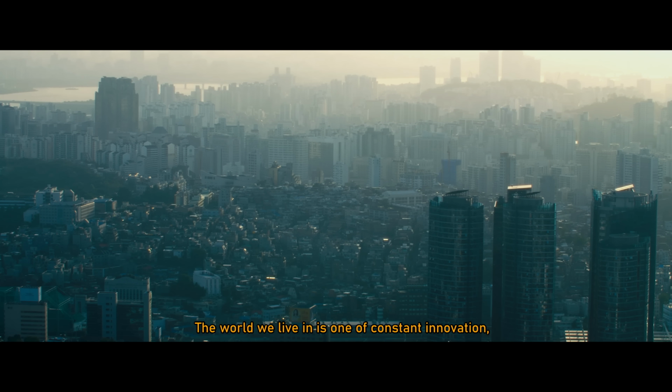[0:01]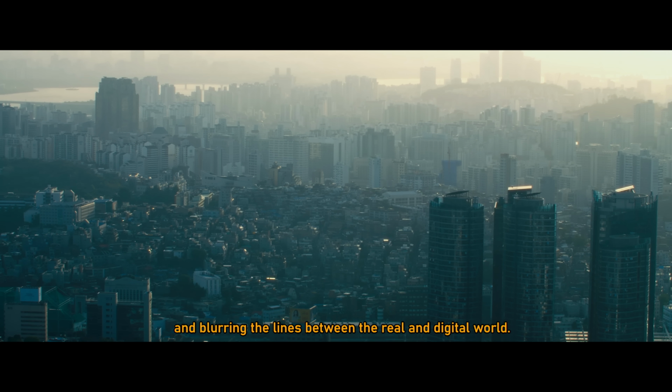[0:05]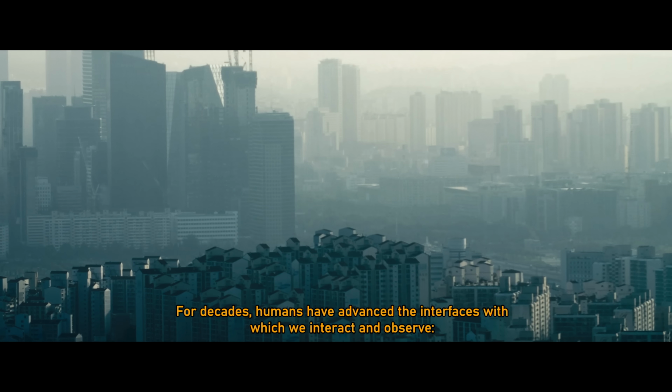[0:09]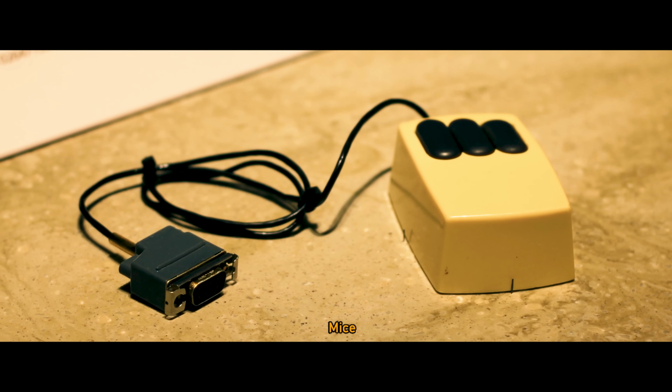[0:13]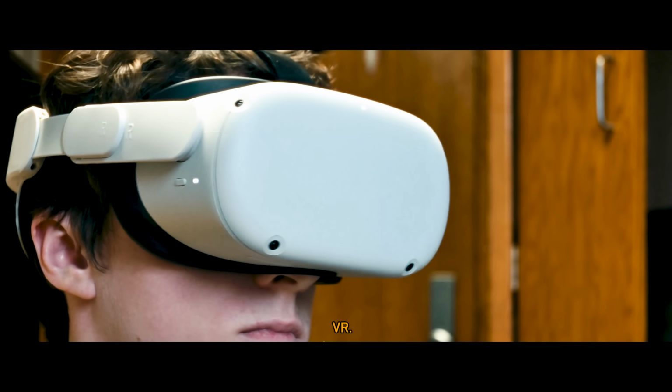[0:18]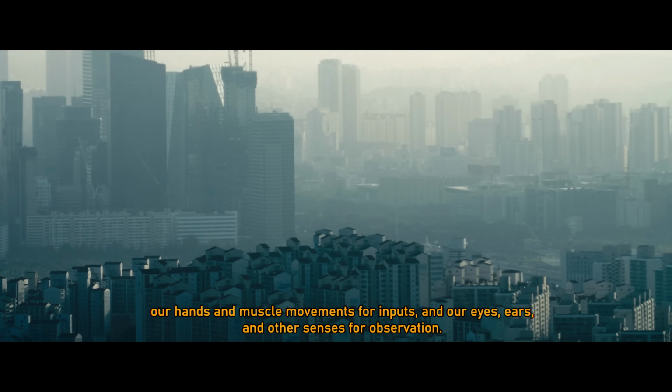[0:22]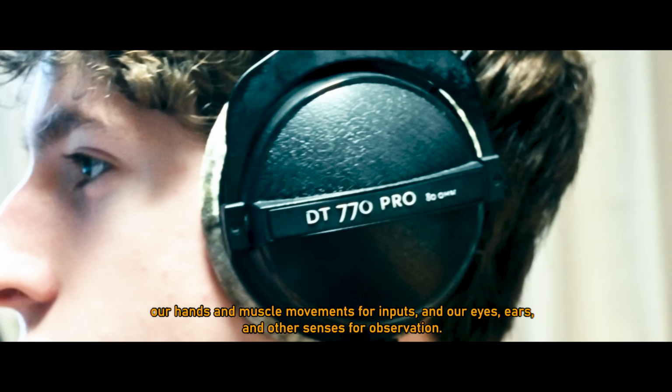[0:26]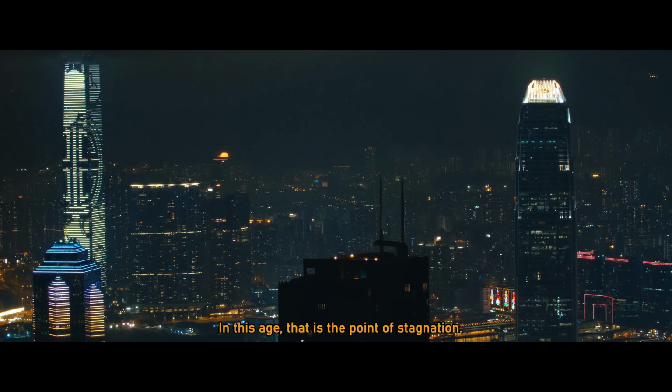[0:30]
The world we live in is one of constant innovation, progression of technology, and blurring the lines between the real and digital world. For decades, humans have advanced the interfaces with which we interact and observe. Keyboards, mice, touchscreen, incandescent, CRT, LED, VR. But our abilities are limited by the methods we use, our hands and muscle movements for inputs, and our eyes, ears, and other senses for observation. In this age, that is the point of stagnation.
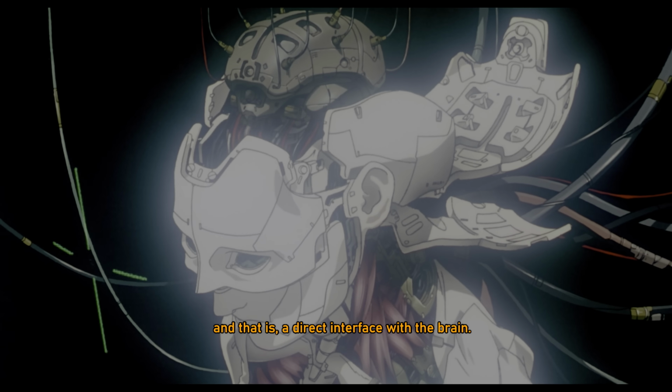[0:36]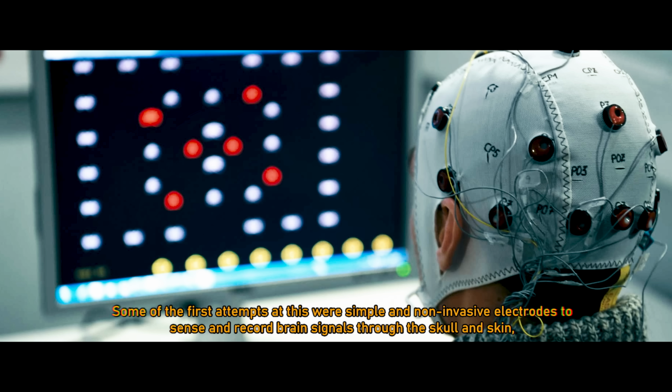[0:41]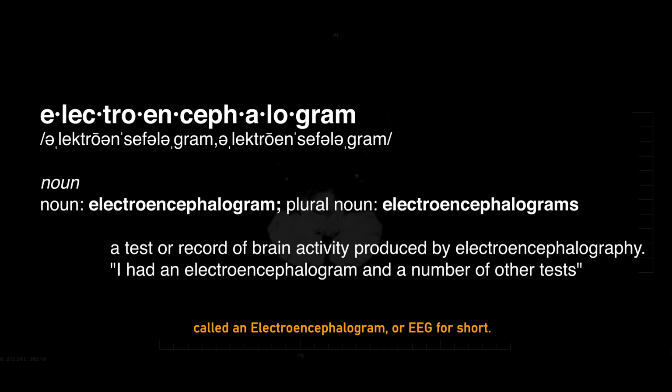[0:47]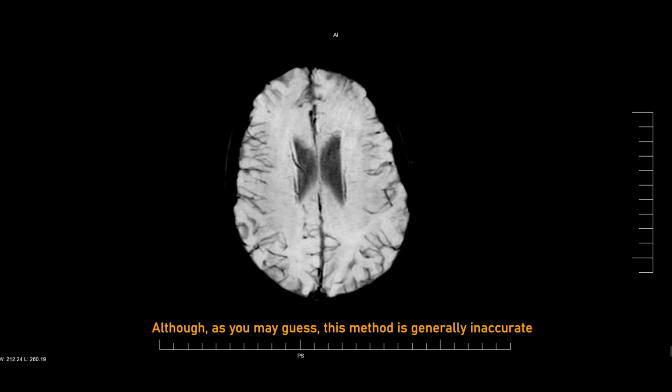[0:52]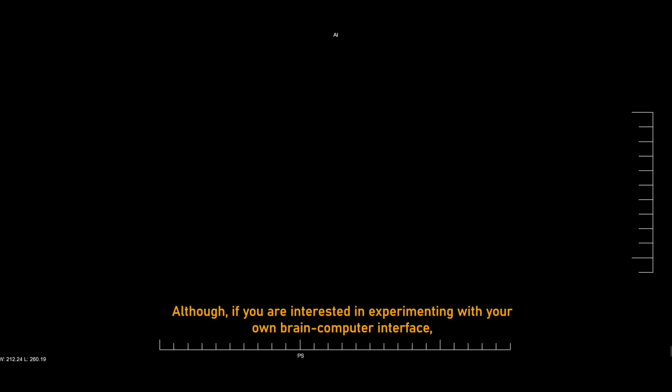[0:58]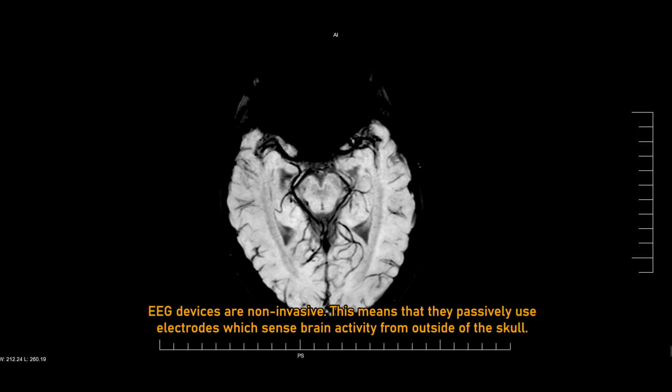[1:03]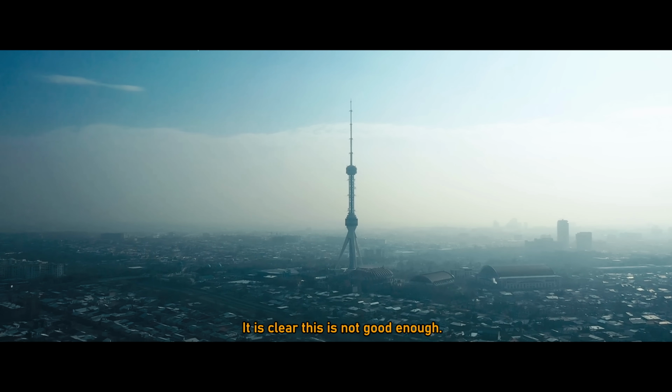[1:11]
There's only one next step that will propel humanity into the future, and that is a direct interface with the brain. Some of the first attempts at this were simple and non-invasive electrodes to sense and record brain signals through the skull and skin, called an electroencephalogram, or EEG for short. Although, as you may guess, this method is generally inaccurate and not particularly useful for the applications we are interested in. Although, if you are interested in experimenting with your own brain-computer interface, it is still the easiest method. EEG devices are non-invasive. This means that they passively use electrodes which sense brain activity from outside of the skull. It is clear this is not good enough.
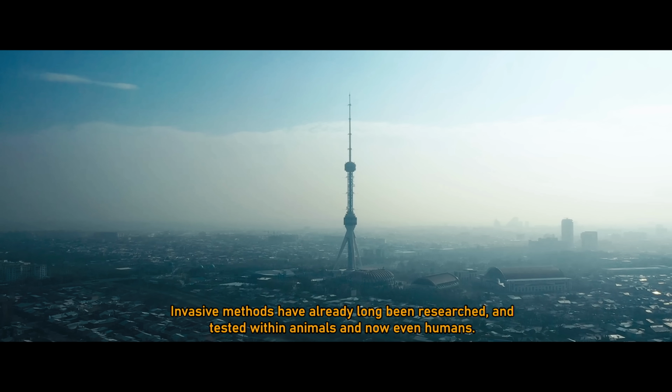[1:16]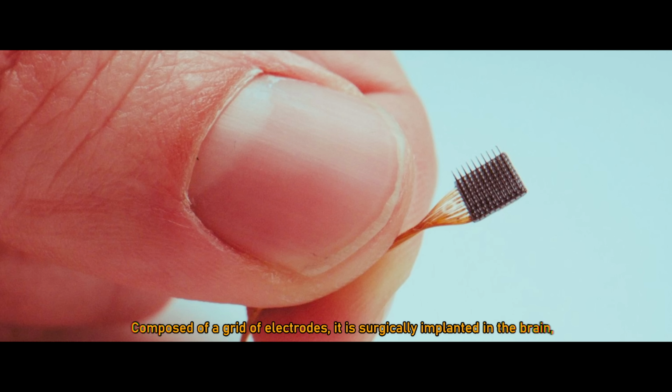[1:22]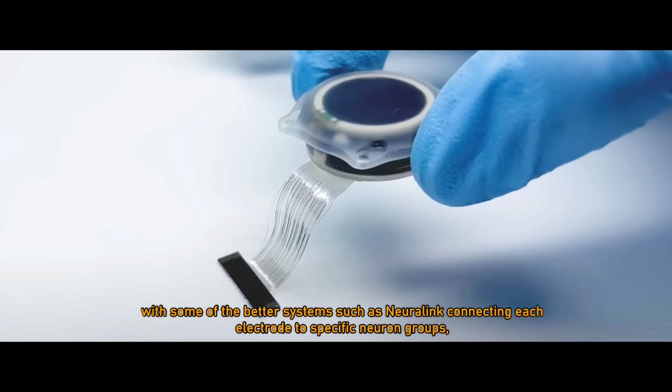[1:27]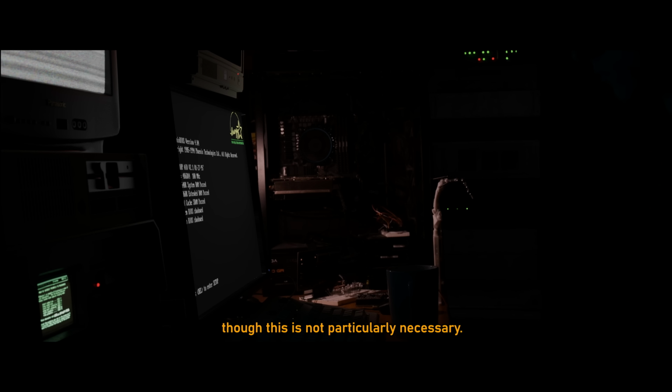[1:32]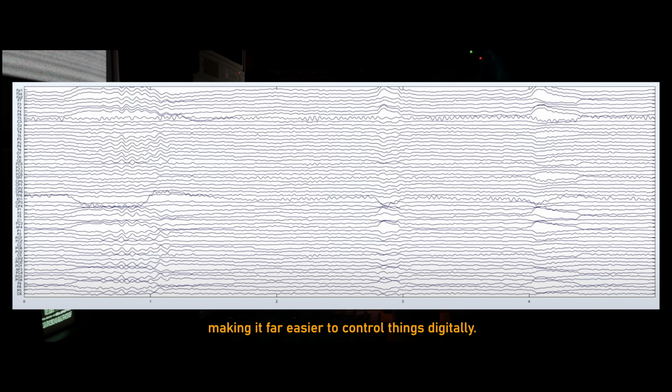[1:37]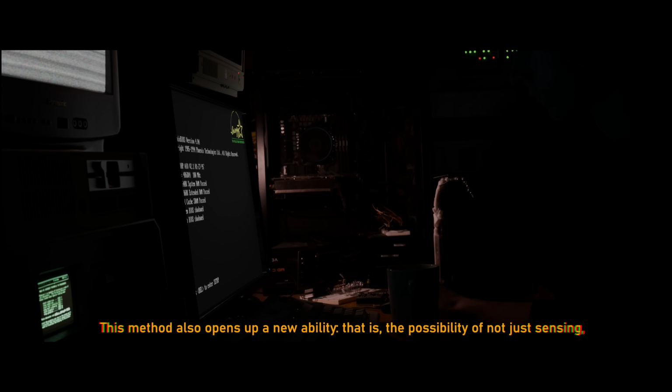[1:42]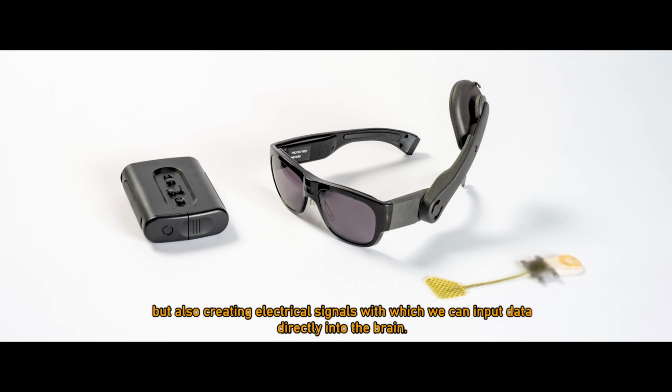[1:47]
Invasive methods have already long been researched and tested within animals and now even humans. The method we will be talking about today is the microelectrode array. Composed of a grid of electrodes, it is surgically implanted in the brain, with some of the better systems such as Neuralink connecting each electrode to specific neuron groups, though this is not particularly necessary. This essentially allows for real-time sensing of many extremely specific areas of the brain, making it far easier to control things digitally. This method also opens up a new ability, that is, the possibility of not just sensing, but also creating electrical signals with which we can input data directly into the brain.
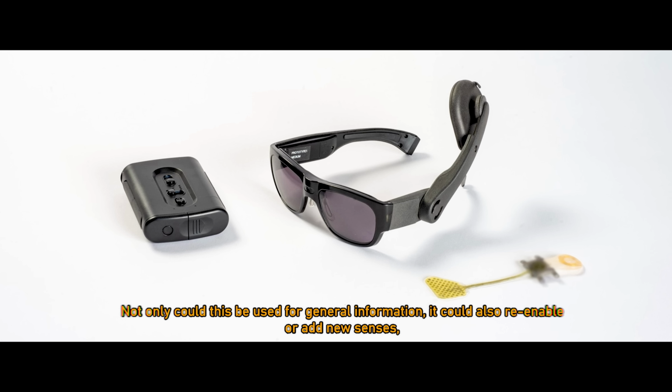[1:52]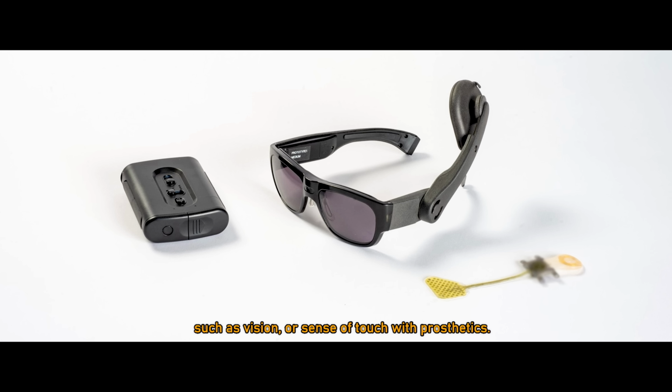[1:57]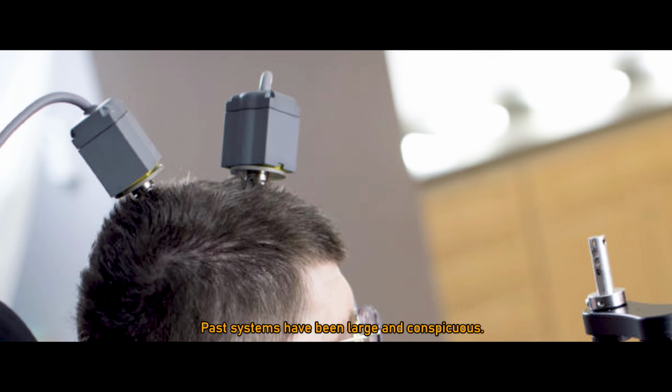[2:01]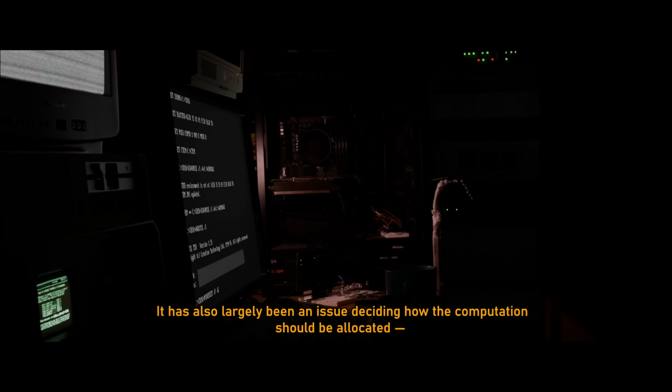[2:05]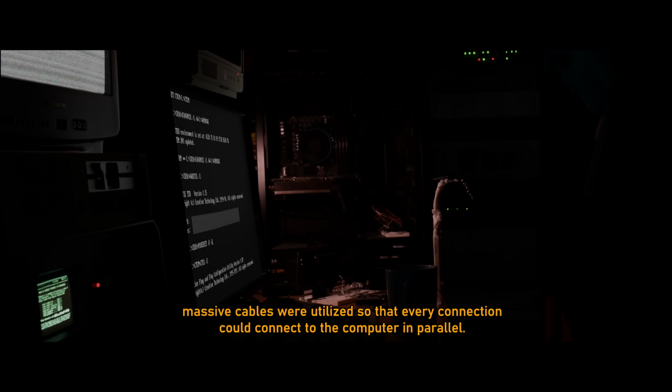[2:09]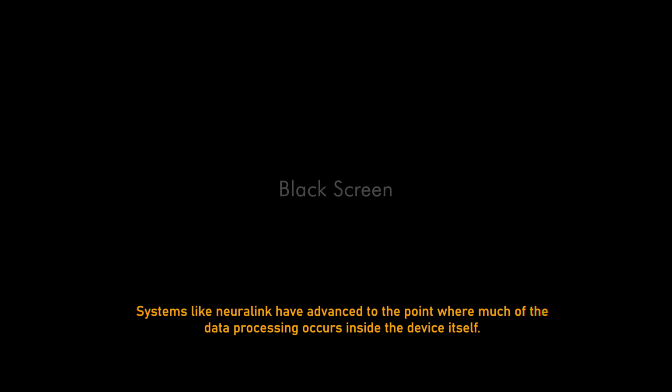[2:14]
Not only could this be used for general information, it could also re-enable or add new senses, such as vision or sense of touch with prosthetics. Past systems have been large and conspicuous. It has also largely been an issue deciding how the computation should be allocated. In years when data processing was difficult, even by a large computer, massive cables were utilized so that every connection could connect to the computer in parallel. Systems like Neuralink have advanced to the point where much of the data processing occurs inside the device itself.
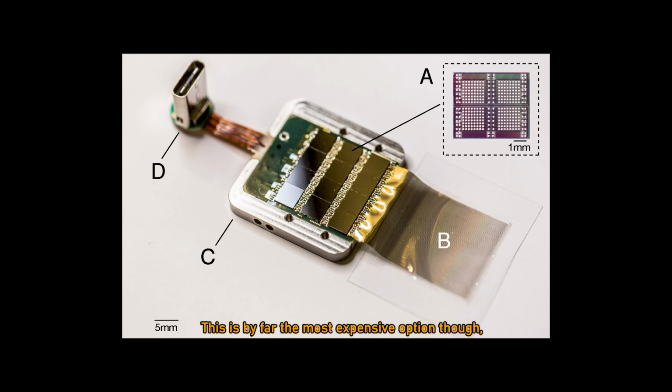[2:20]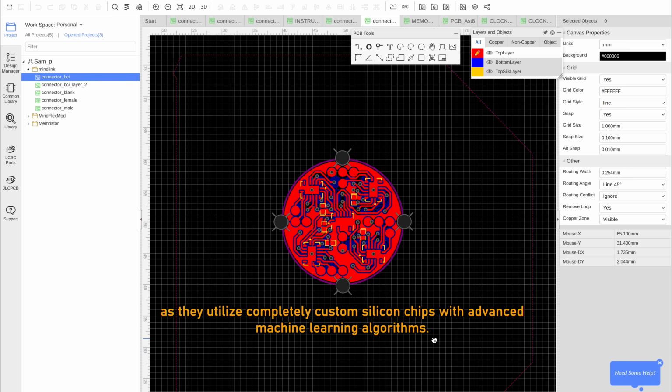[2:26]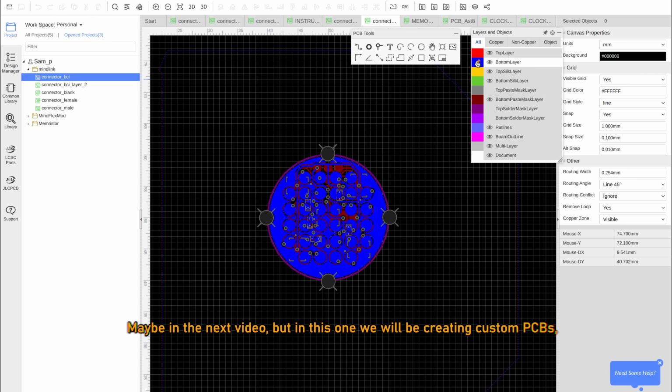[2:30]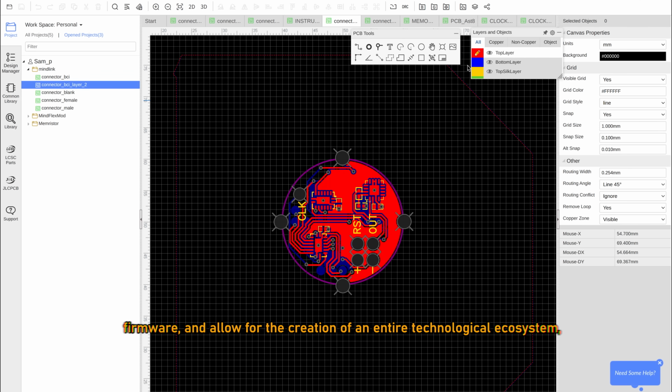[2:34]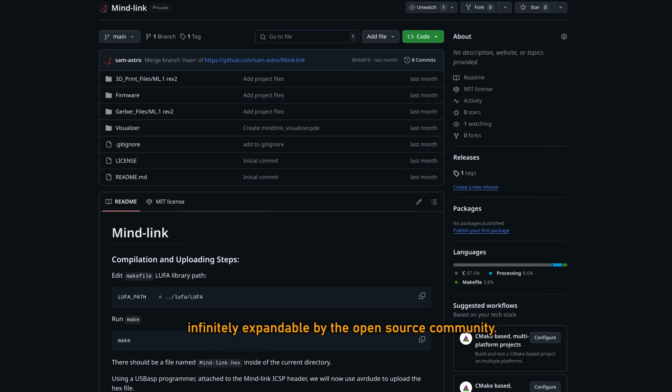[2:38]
This is by far the most expensive option though, as they utilize completely custom silicon chips with advanced machine learning algorithms. Today I will not be creating my own silicon, unfortunately. Maybe in the next video, but in this one we will be creating custom PCBs, firmware, and allow for the creation of an entire technological ecosystem, infinitely expandable by the open source community.
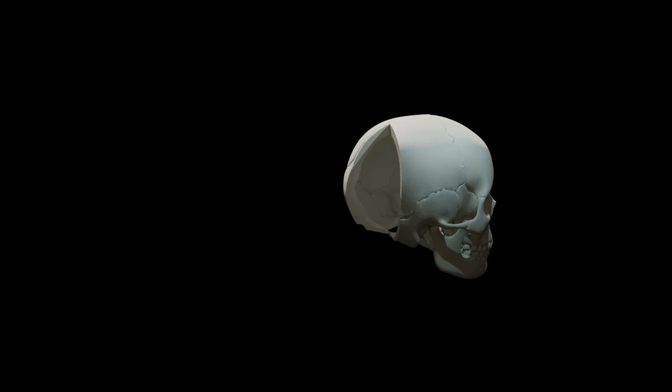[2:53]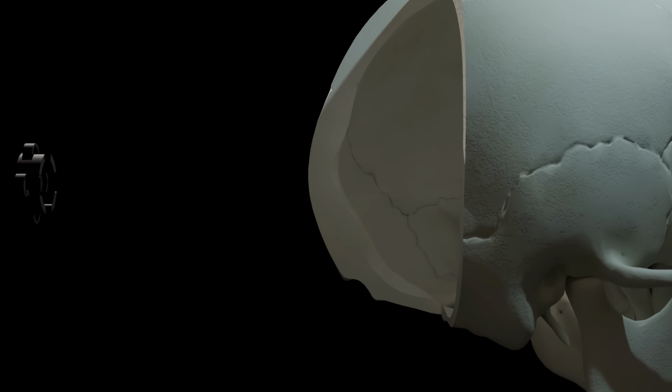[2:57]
Starting off, let's identify some dimensional constraints. As stated before, it needs to be quite small. The back of the skull, near where the spine connects, is the thickest part on average, so ideally that is where it should be implanted. This would allow for the device to have as much hardware as possible, while still remaining in the same general size footprint your head already does.
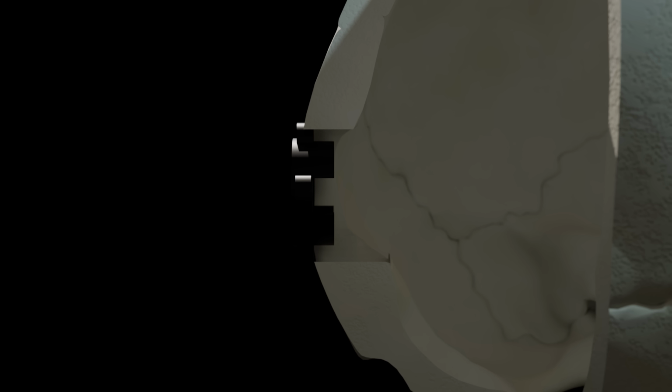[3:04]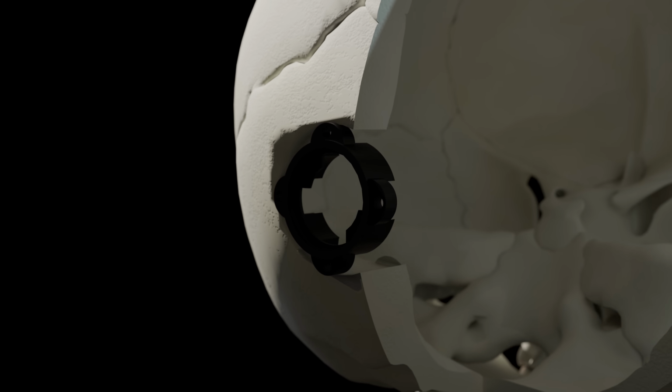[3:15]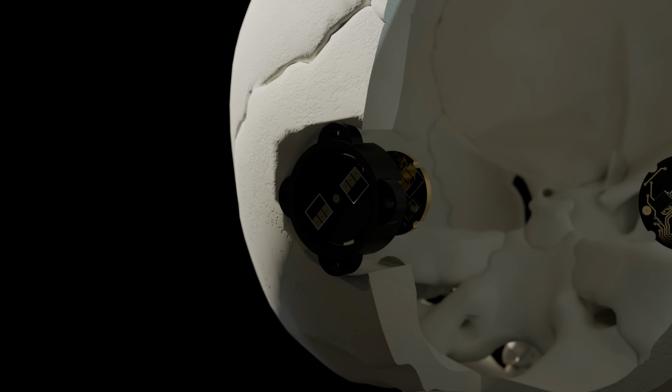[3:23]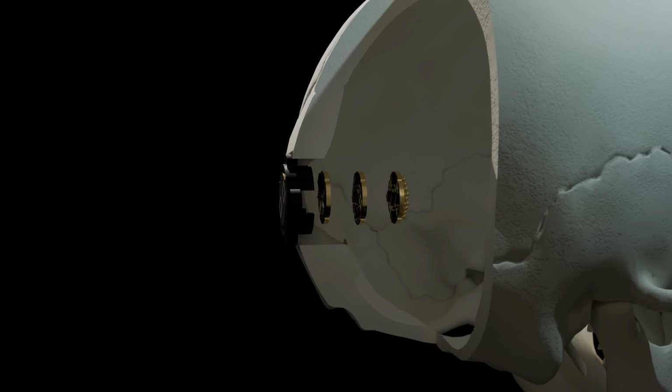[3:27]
I believe it is also quite important to be able to fully remove the device without any form of surgery, just a simple screwdriver, to allow for extremely simple maintenance and installing custom expansions. So I decided I would make it a circular shape, about 20mm in diameter. Now it would be essentially impossible to do anything with that scale, so it is actually a stacked design, making use of that depth of the skull. Each layer can be connected by spring pins to allow for electrical contacts and data transfer between layers.
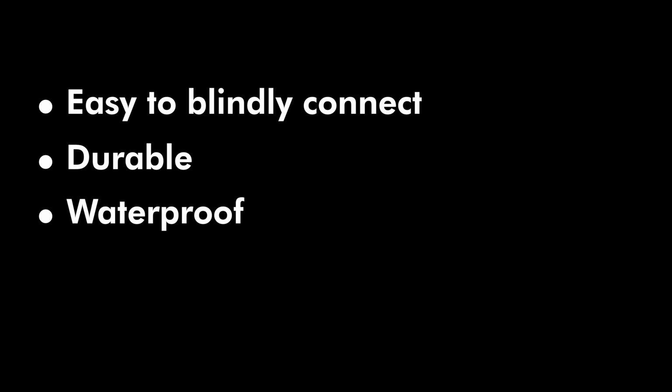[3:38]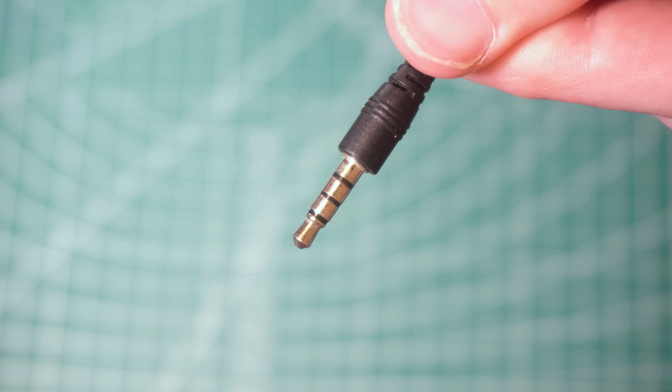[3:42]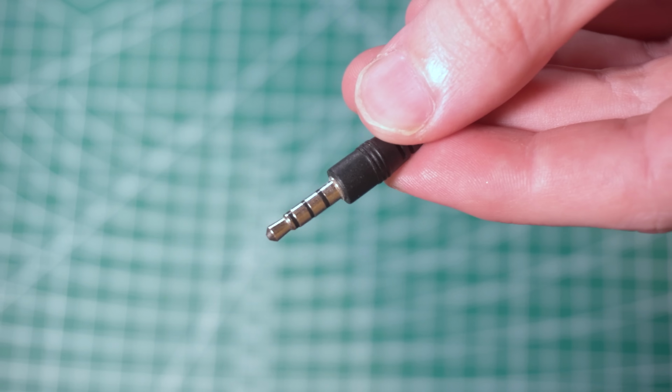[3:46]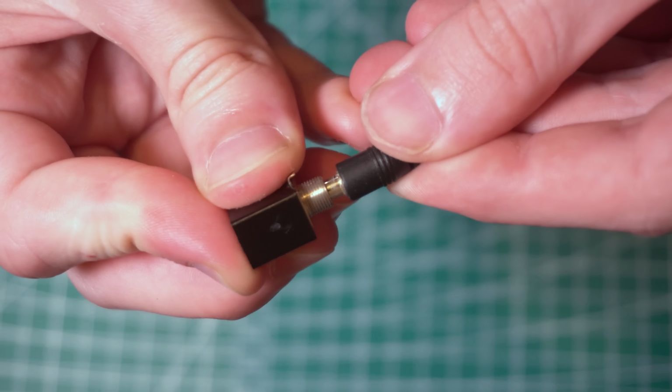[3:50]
Another important constraint is that I want any connector to the device to be easy to connect without looking, durable, waterproof, and compatible with a current standard. While it does have its own shortcomings, I've always admired the 3.5mm audio connector. It allows one to easily plug a cable in at any orientation and can rotate freely. It also has a number of siblings of different sizes and standards, but it is usually used for analog signals.
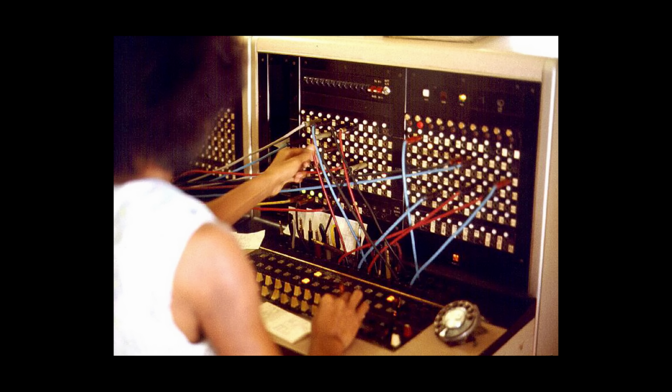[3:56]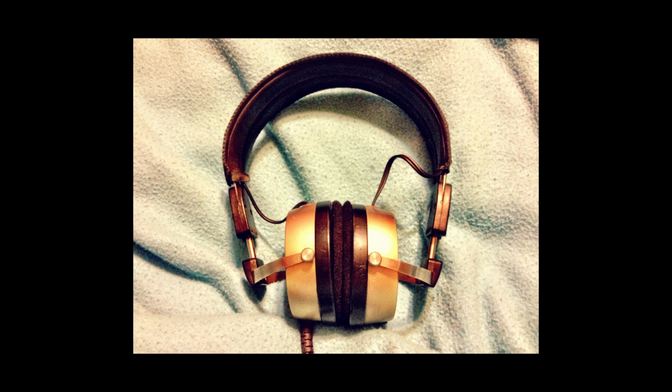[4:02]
It was originally invented for phone switchboards in the late 19th century, but is now most commonly used for headphones and audio equipment. It would not be applicable to use for a brain-computer interface application though, for a number of reasons. The first is that it is too long, even with the shortest being about 1 centimeter in length. We are putting the device on the back of the head, so we do have roughly this depth to work with, but we have other issues as well.
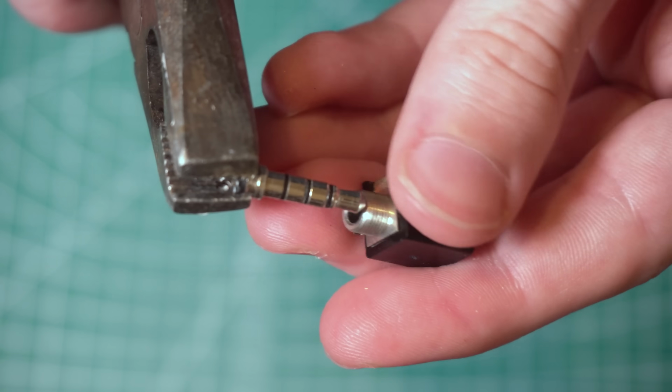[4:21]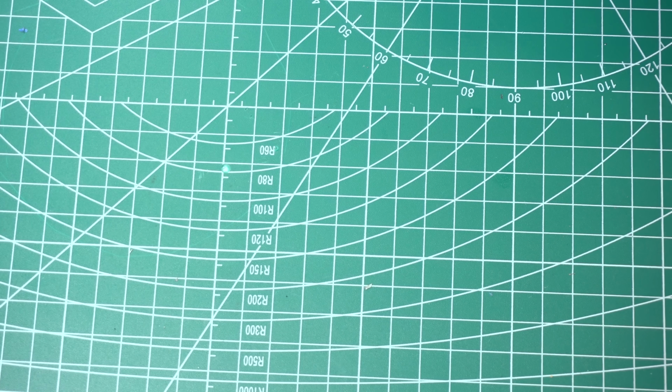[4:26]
If the connector itself fails by breaking, it does so not safely. Those of you who have had a headphone connector break off inside a device would know, it is difficult to remove or replace. So instead of making our connector have pads around a cylinder, we can flatten them, creating a circular connector. This way, all of the connections happen at the surface, and the connector can freely rotate.
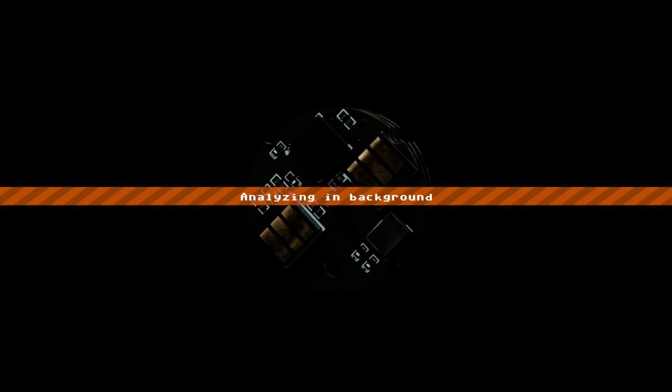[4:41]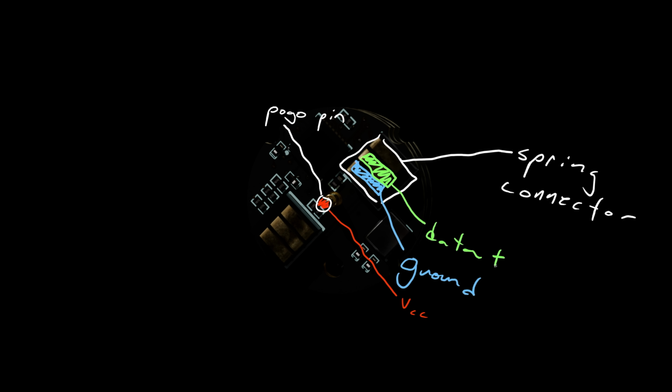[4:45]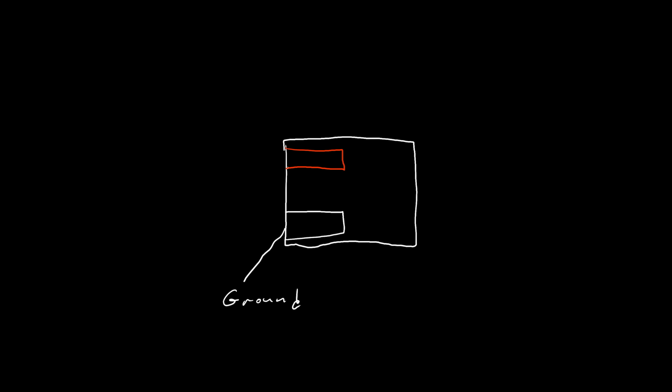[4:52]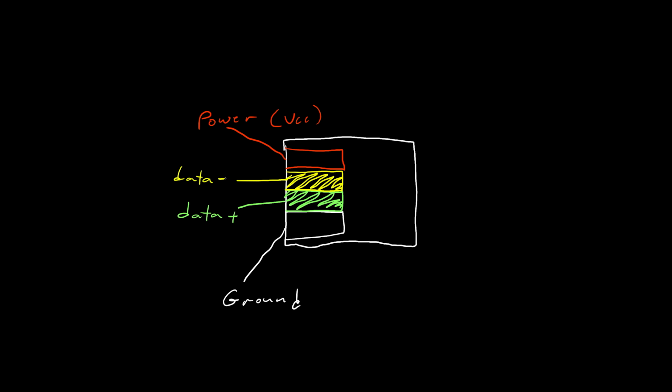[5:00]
The cable side will just be a flat PCB for simplicity, and the device itself will have a spring connector connecting to each of the pads, with a single pogo pin for power in the center. I decided to make this compatible with USB, so it contains 4 total connections, for ground, power, data plus, and data minus. This will make connecting to computers and accessories easy, but it will also allow adding expansions by treating them as USB devices.
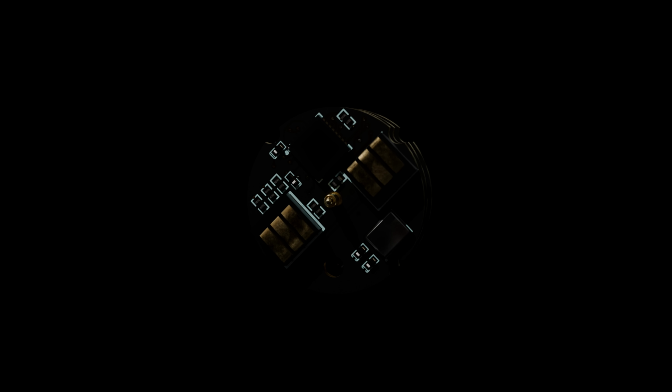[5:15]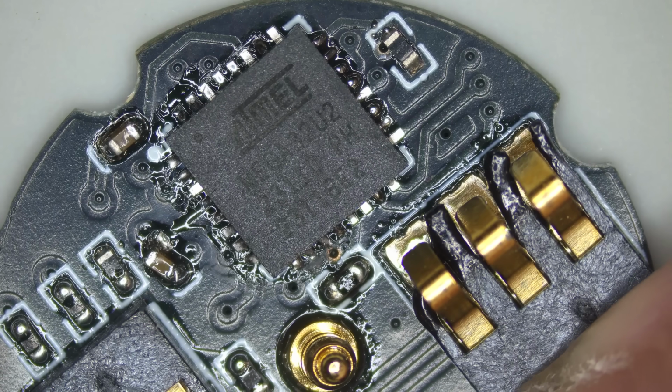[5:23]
Working backwards from the cable, it will connect to the device's PCB stack through a placeholder riser. This is a layer that just increases the height of the stack, so that in the future you can swap in an expansion device. After that, it connects to the main board of the device. The purpose of this board is to handle all inputs, accessories, USB devices, and read the BCI data. I use an Atmega32U2 microcontroller for this purpose because of its built-in USB support, but ideally this role should be delegated to a more powerful processor in the future.
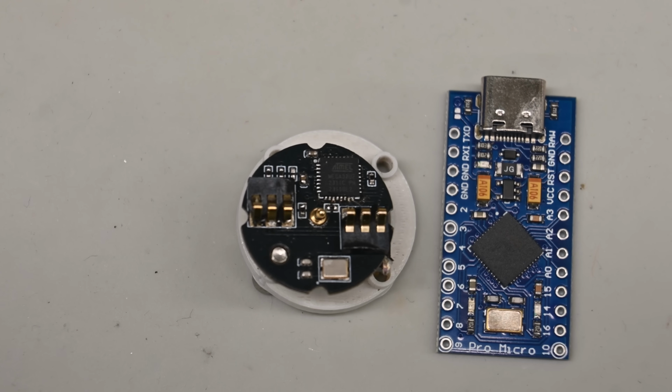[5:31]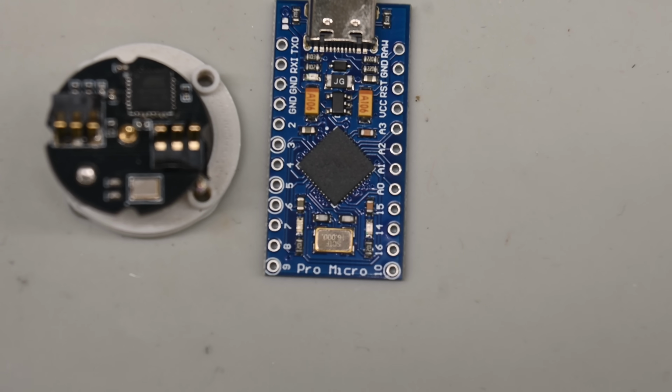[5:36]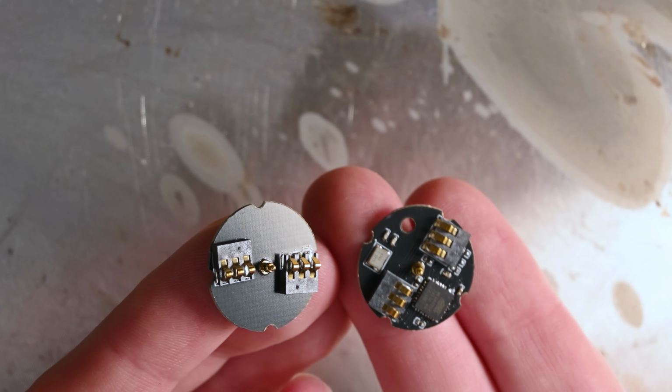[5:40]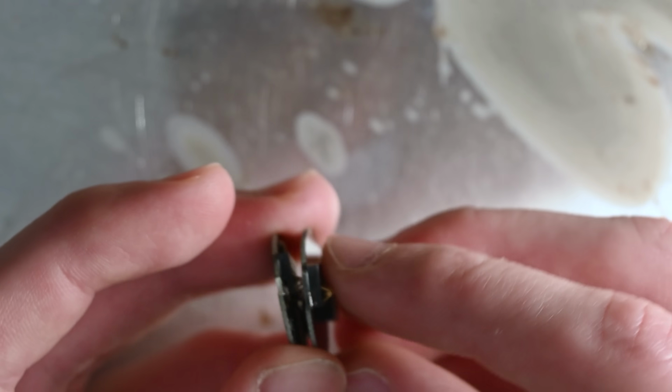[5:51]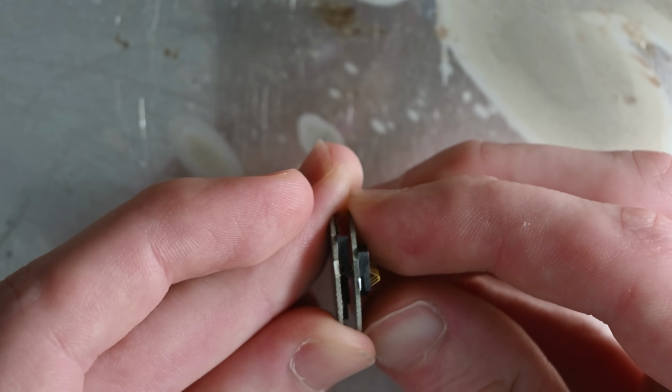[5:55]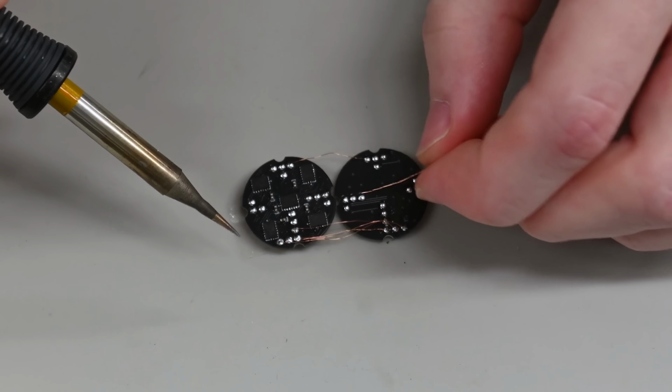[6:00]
The 32U2 is a smaller and slightly less capable little sibling to the Atmega32U4, which is used for things such as the Arduino Pro Micro. It is also important to note that this is the last layer to use USB. This is because the next parts not only require more data pins, and it would be a waste of time and space to add another USB chip, but it also is quite an essential component, so really should not require separation beyond this point unless damaged or an upgrade is needed. This may change in the future as well, just to allow more modularity anyway, but currently these connections I've decided to be completely hand soldered.
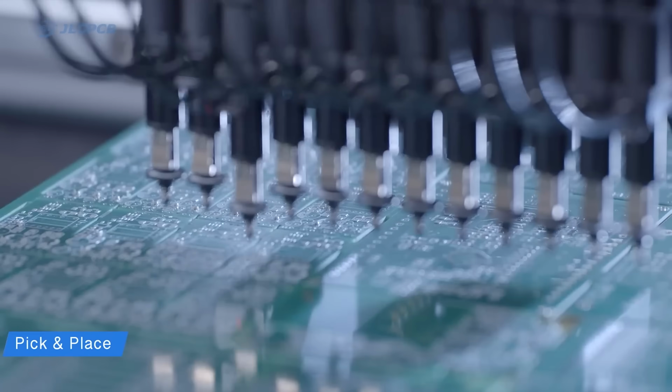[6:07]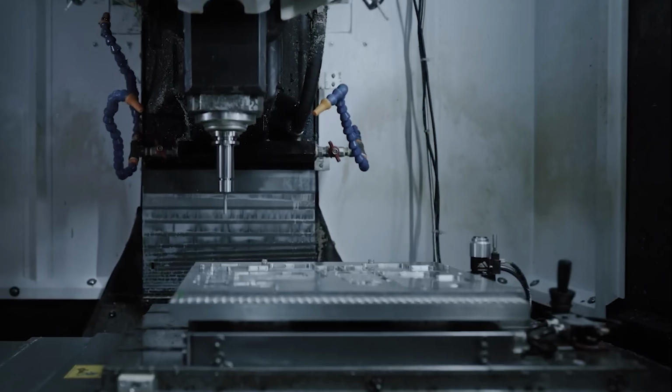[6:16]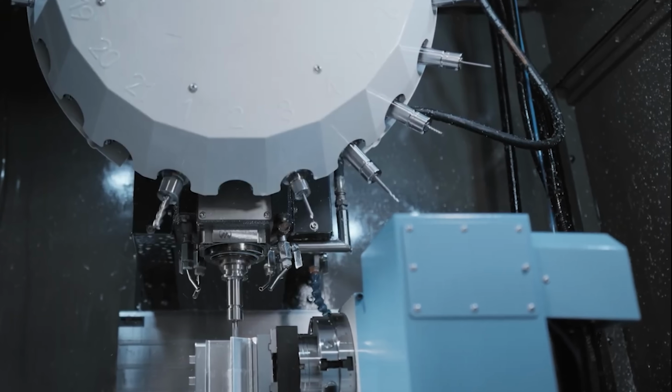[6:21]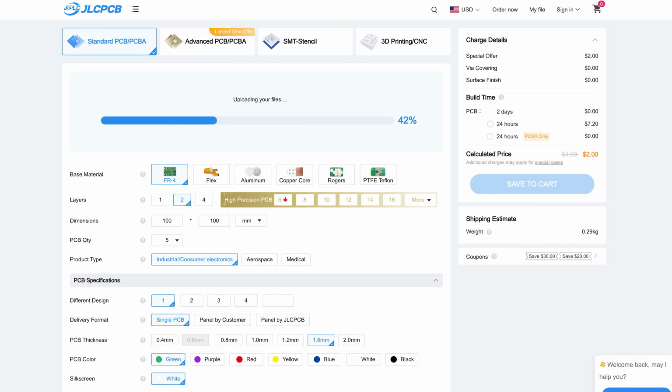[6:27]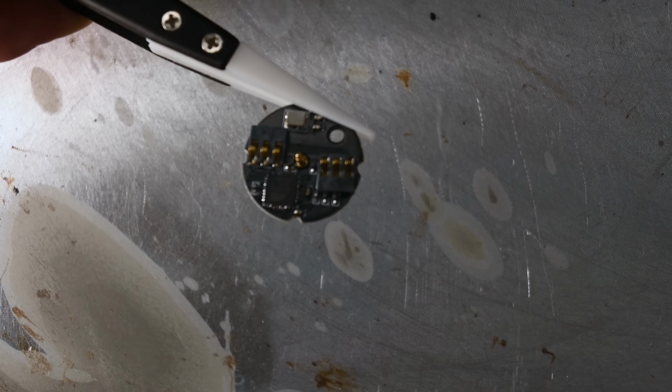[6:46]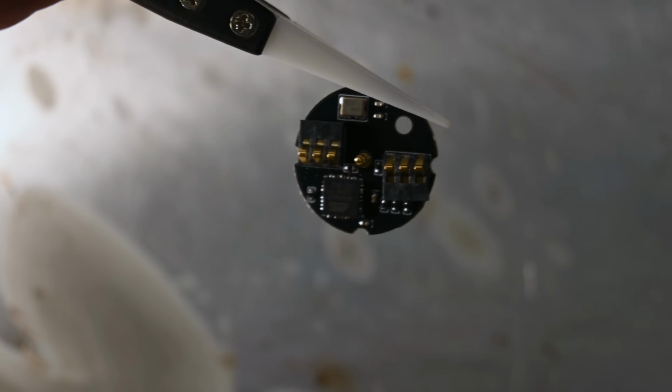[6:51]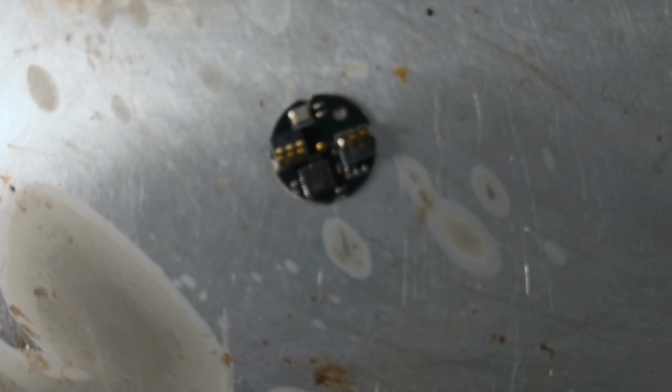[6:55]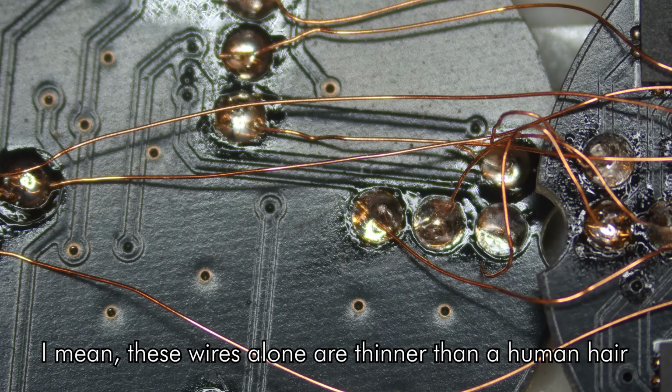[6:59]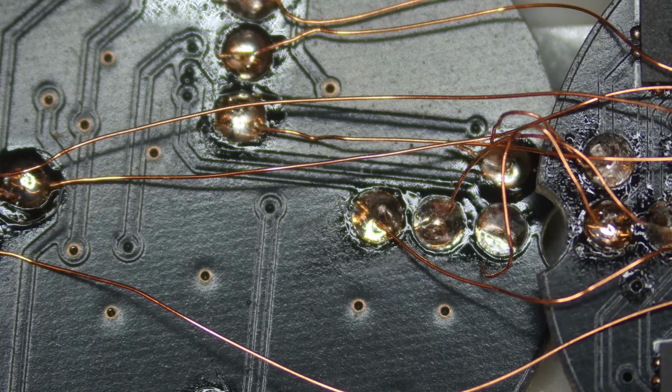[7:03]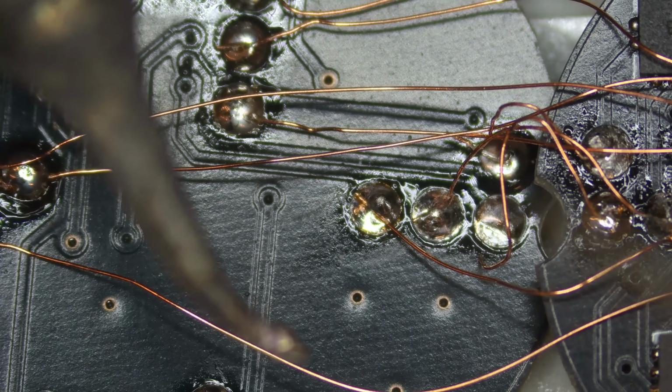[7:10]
The main board, and all of the other boards for that matter, only use surface-mounted components. This is without question for an application of this scale, but some of the parts or their connections are so small they are difficult to see with the naked eye. As such, it took a number of attempts and resoldering after using the solder mask to get each part to a working state. That is also the reason much of this footage is actually filmed through a digital microscope from my university, which was invaluable.
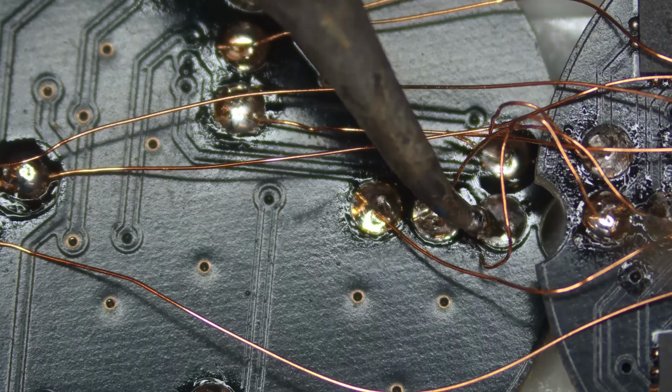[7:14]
This project is reaching a scale where it is likely more economical and time effective to have all or most components soldered by a pick-and-place machine, where the PCBs are fabricated, at JLCPCB. At this point, we want to program the microcontroller.
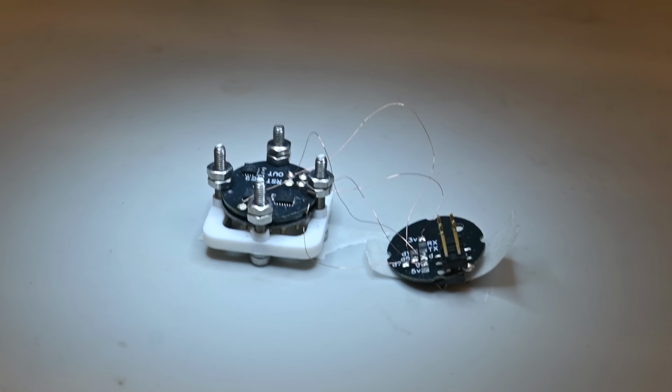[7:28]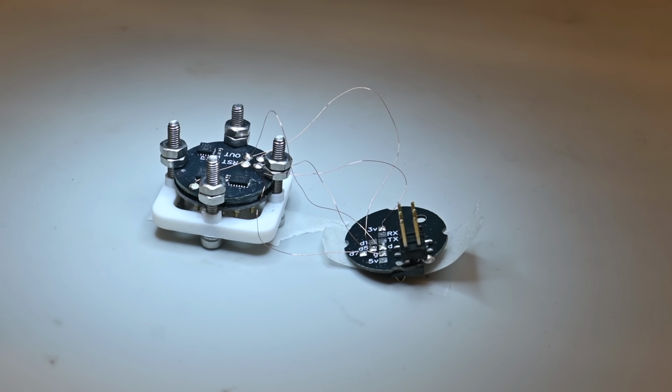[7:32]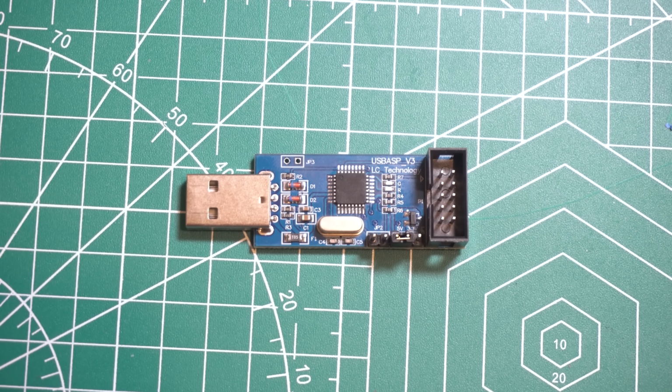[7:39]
I left pads on the back of the PCB for programming with ICSP. It is possible to just press the pins of the programmer against these pads, but it is easier and probably safer for the microcontroller to just solder a temporary header. I used a programmer called USBasp, which made the process of uploading quite easy using AVRDude.
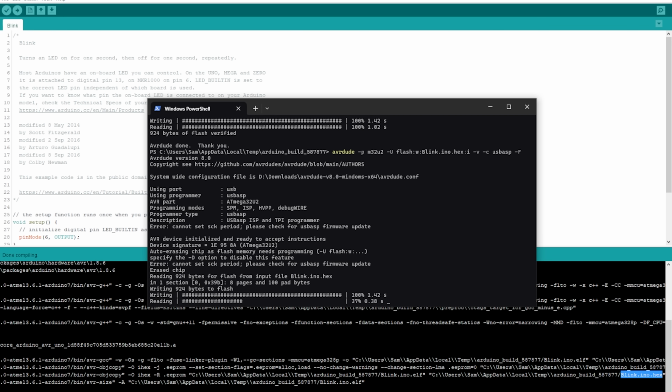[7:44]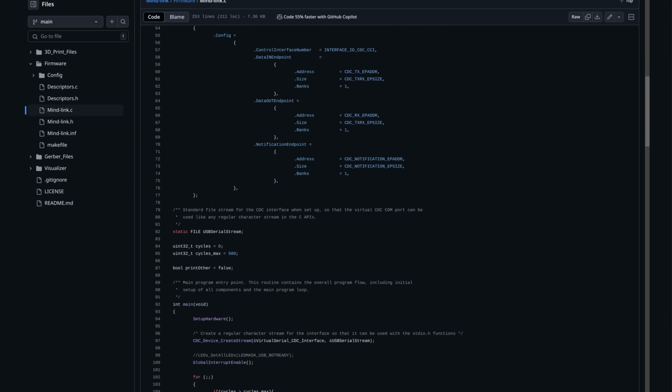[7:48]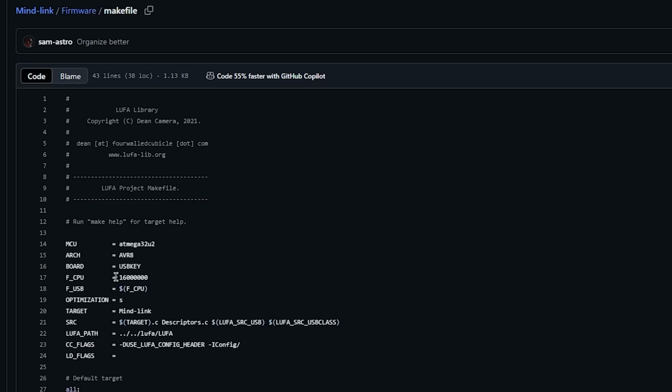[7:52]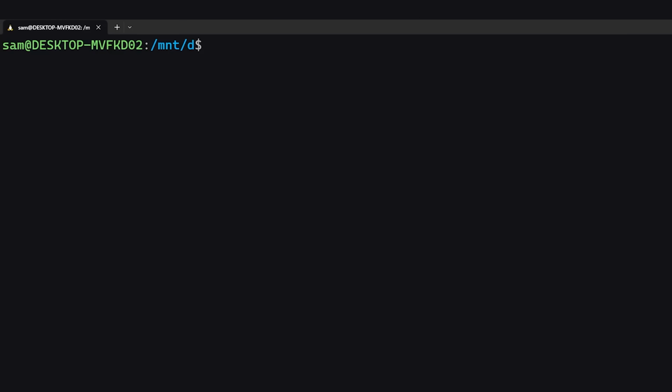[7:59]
I utilized a library called LUFA to communicate over USB, and edited the example serial demo written in C to send data. I also needed to change values in the makefile, specifying that I am using a 16 MHz external clock, and that I'm using the ATmega32U2. I used this command to upload, and it should now be working.
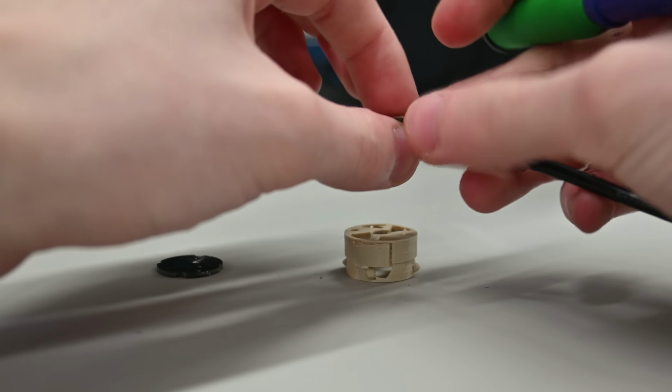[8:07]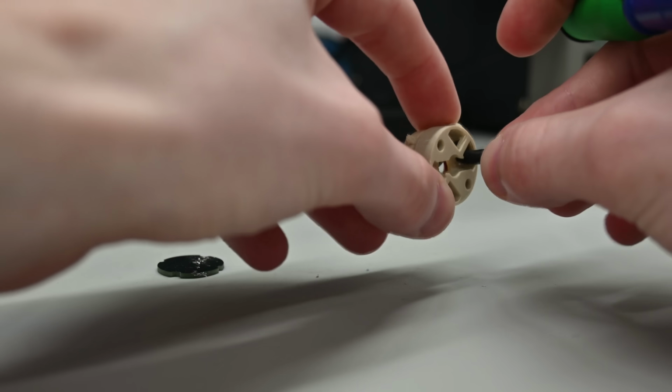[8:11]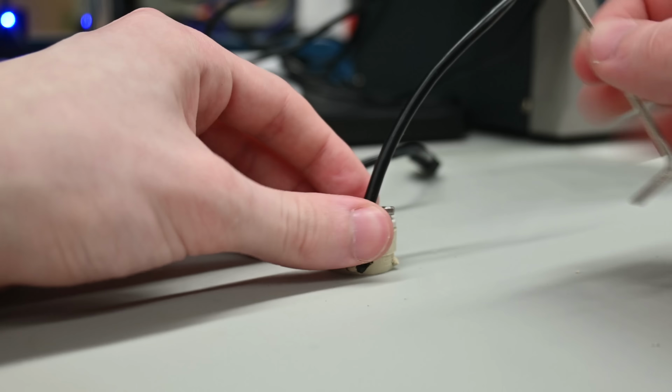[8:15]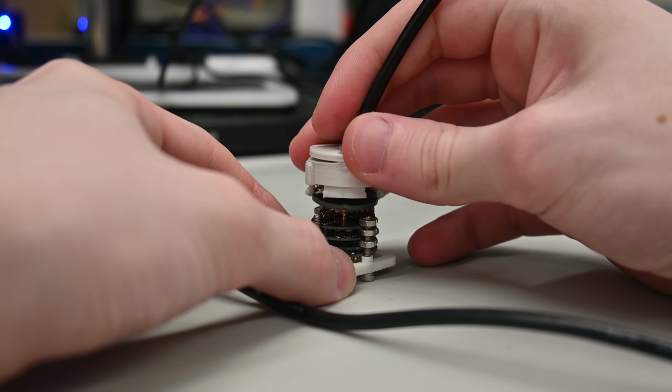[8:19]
Before I can test if everything is functional, I need to make the cable. I used a sacrificial USB-A cable, spliced the end, and passed it through a 3D printed connector end I designed. Then I soldered it to the circular male PCB and tightened the screws to hold it in place. But after connecting everything, all I got was an error in Windows about the USB device malfunctioning.
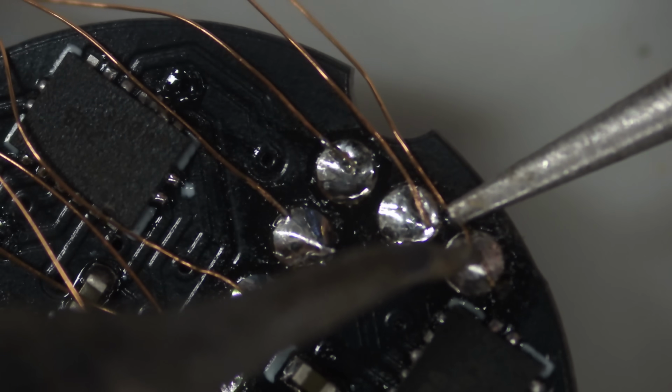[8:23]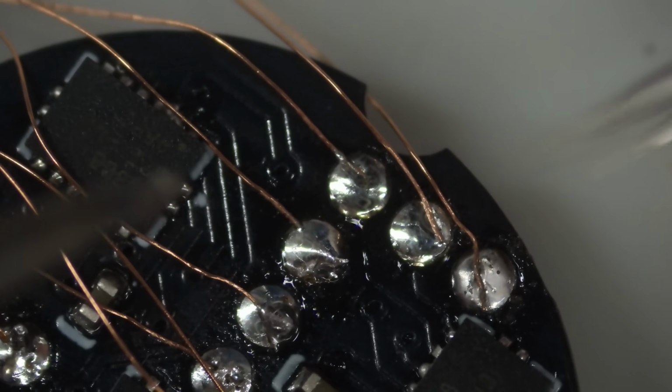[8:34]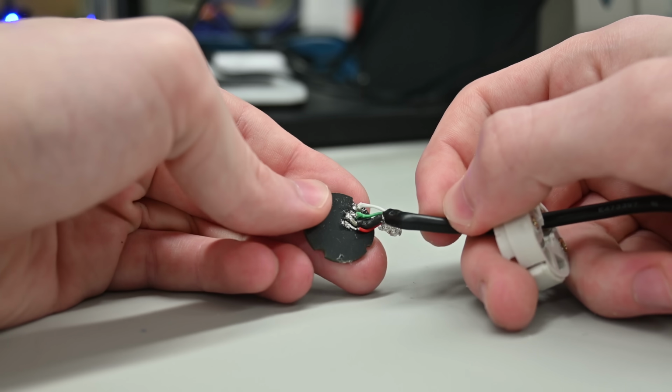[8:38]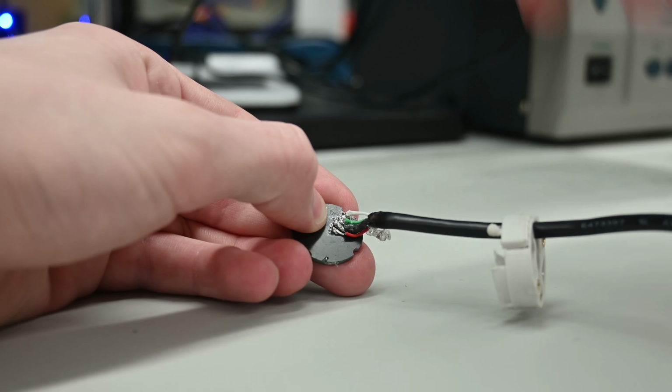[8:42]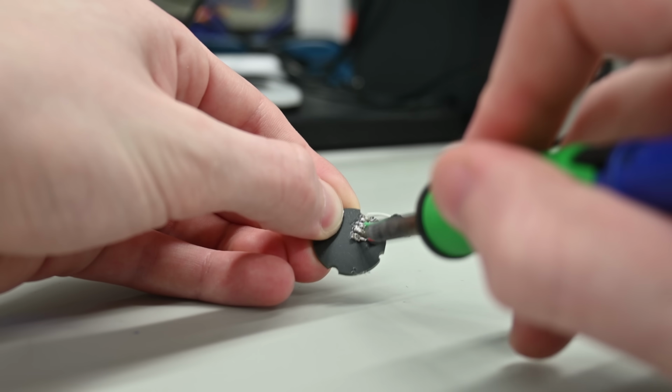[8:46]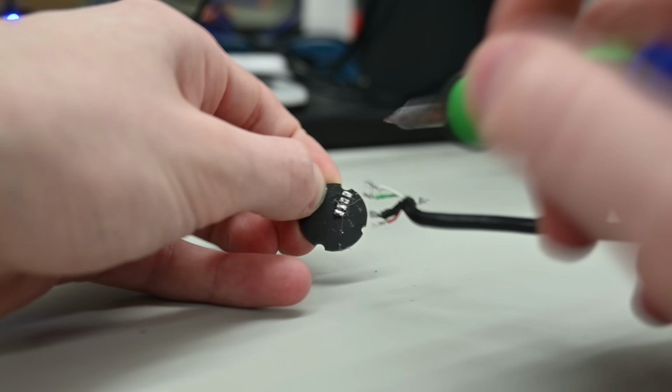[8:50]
I spent many hours looking at the PCB under the microscope, trying to find bad solder joints, resoldering components, checking values, and even completely replacing the microcontroller. Despite any soldering issues, the main problem I encountered was staring me in the face the whole time. I'd somehow accidentally mixed up my data plus and data minus pins on the motherboard, so USB was obviously not working. Luckily though, this did not require reordering the PCBs, as I could just swap around the connections on the custom USB cable I made.
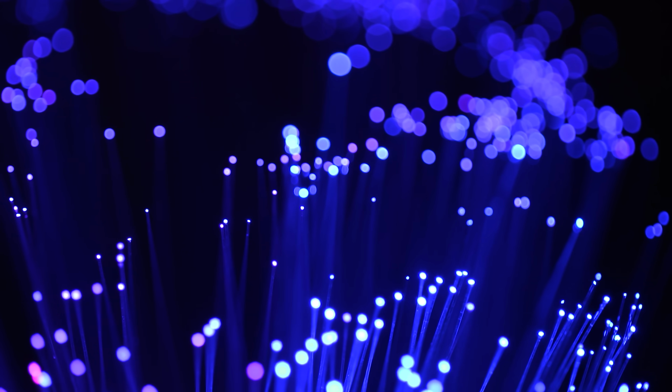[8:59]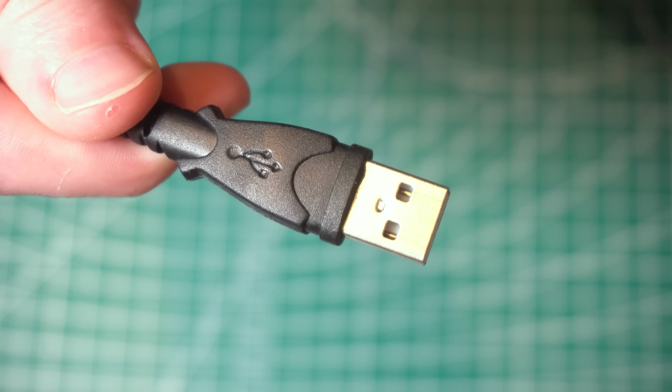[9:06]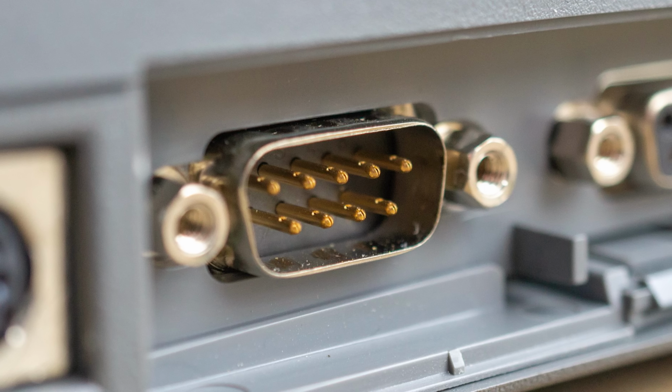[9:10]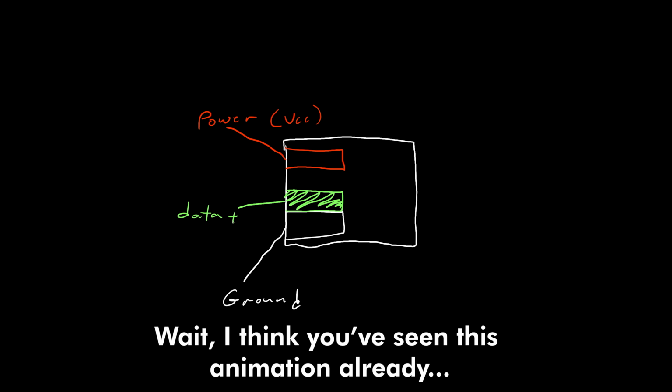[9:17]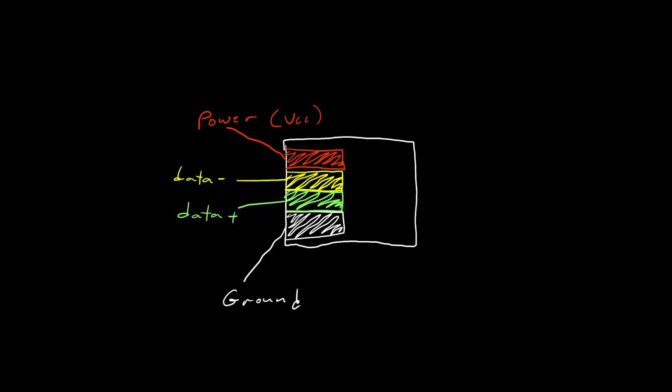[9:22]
Part 2. Data. Data powers the modern world. Data transfer: messenger, horse, car, train, telegraph, phone, internet, fiber optic. USB is a serial communication protocol which succeeded its predecessors of yesteryear, the serial and parallel ports. It utilizes 4 wires: ground, power, data plus, and data minus. The data cables allow back and forth communication from one device to another. A MindLink becomes a peripheral to a computer, your computer a coprocessor to your brain.
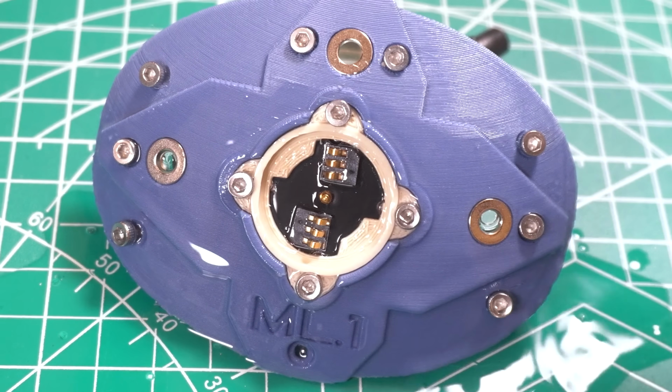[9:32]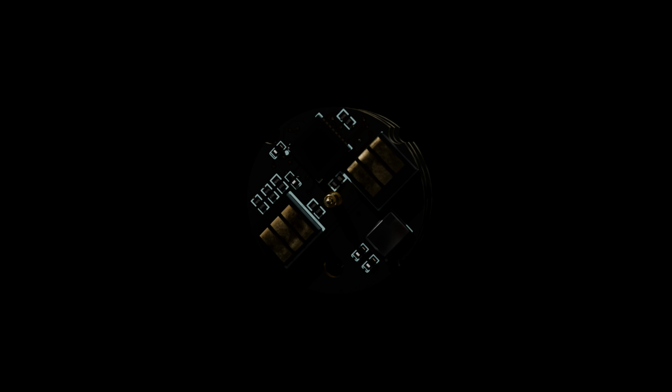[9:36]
Yes, this method is simple for data transfer and expansions, but it has downsides. Waterproofing would be nearly impossible. It also leaves much to be desired in terms of security, since the main controller to the device in your brain is directly exposed and could be damaged or reprogrammed too easily. So there's another type of connector to be used.
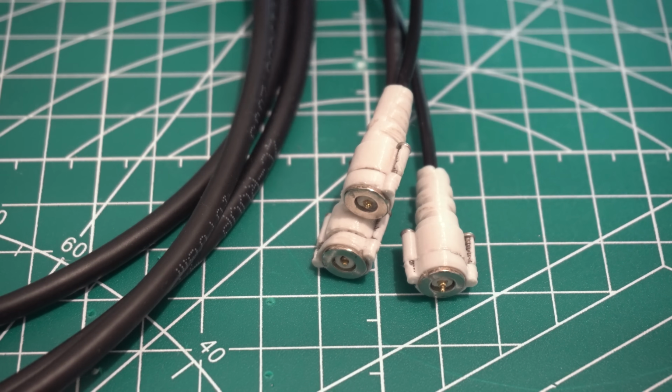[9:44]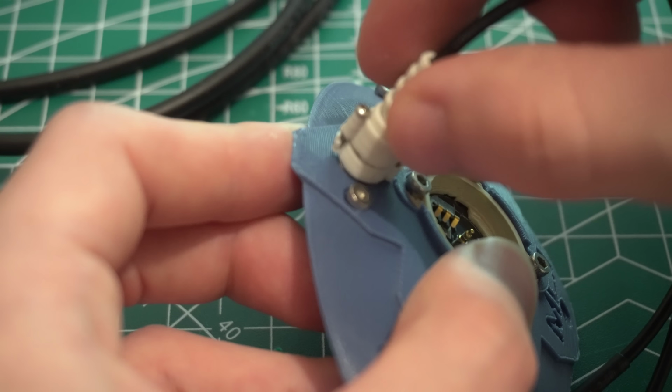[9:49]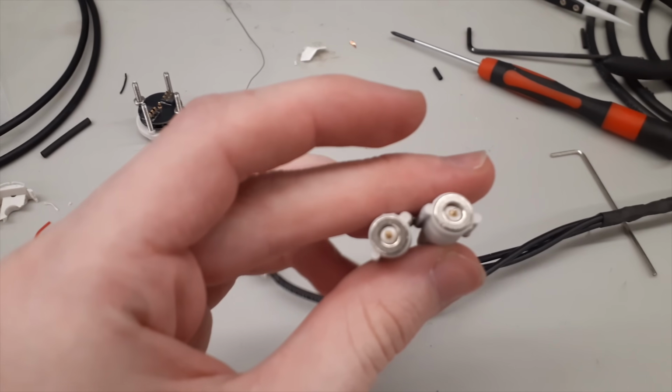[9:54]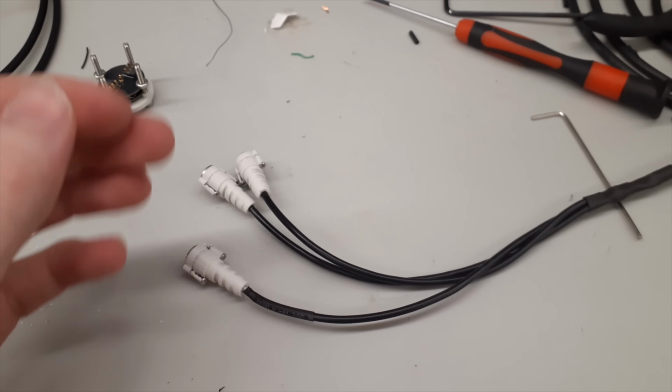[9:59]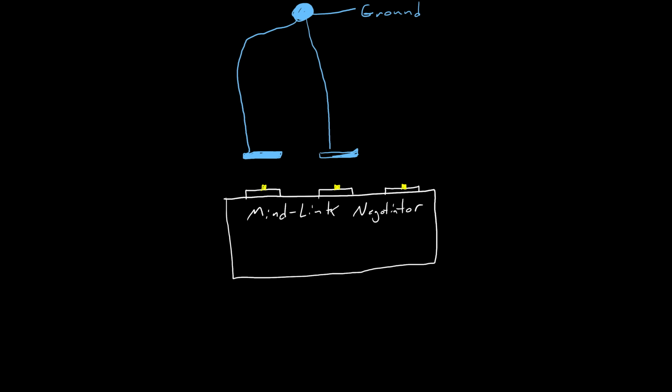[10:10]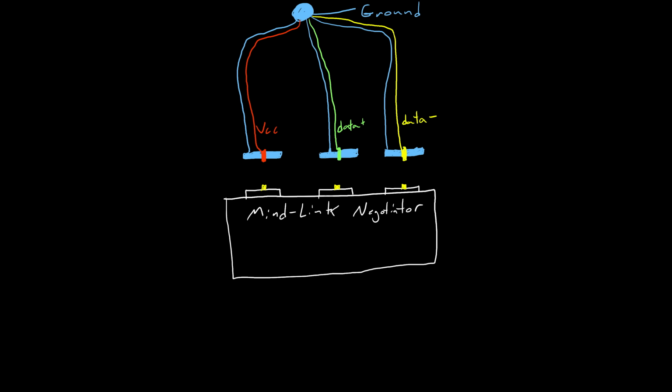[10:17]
This one is also not standardized, but my own design. It utilizes magnets on the connector end, which is connected to ground, with a center spring pin for either 5 volts, data plus, or data minus. Yes, this cable is also somewhat compatible with USB, but with 3 identical connectors, each for a different purpose, just wiring it directly to a computer would result in a short circuit or other unexpected behavior 5 out of 6 times. So the way it functions is actually by making each connection not have a defined purpose until all wires are connected, after which the MindLink will negotiate what wires are connected to which connector and switch accordingly.
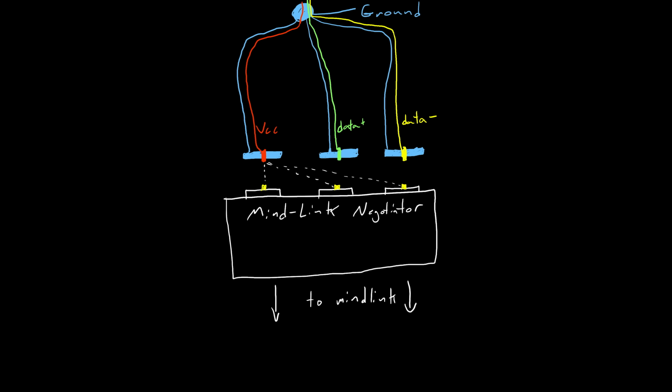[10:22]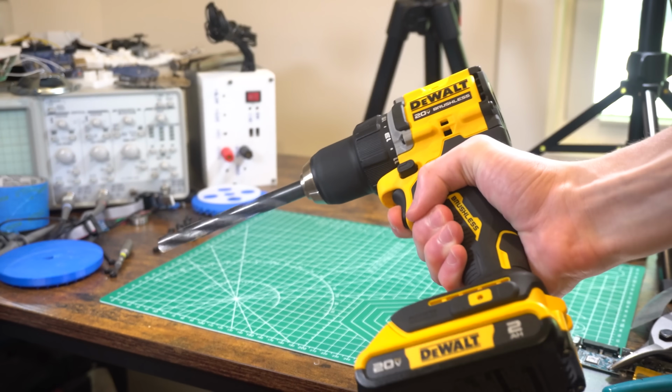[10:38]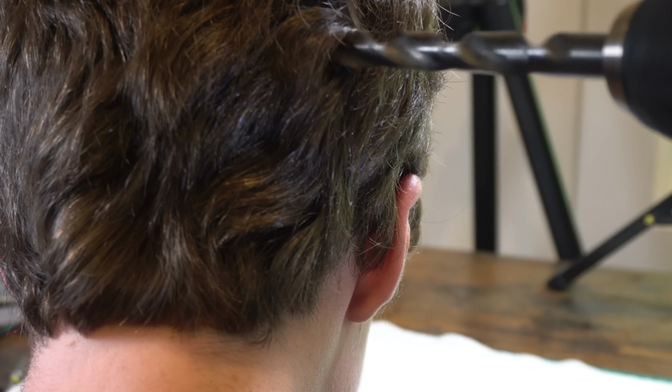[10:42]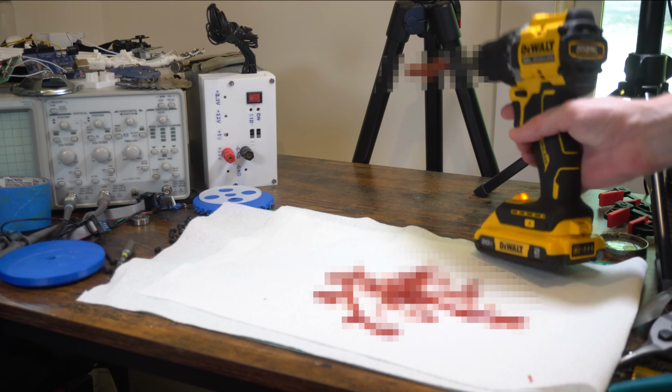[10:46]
And because these connectors utilize magnets, it is easy to connect and disconnect as needed. They are also naturally waterproof because the entire connector is exposed at the surface and it waits for a signal from the computer before sending any amount of voltage through the connections. At this point, I have yet to mention how the MindLink interfaces with the brain. While it is as yet impossible to surgically implant custom brain hardware while in my garage, we can assume everything on the neural interface is ideal.
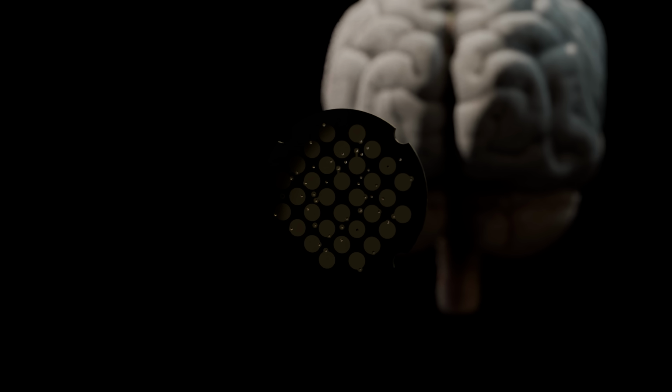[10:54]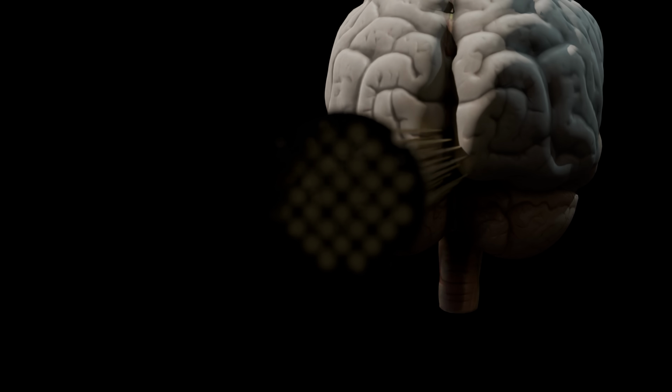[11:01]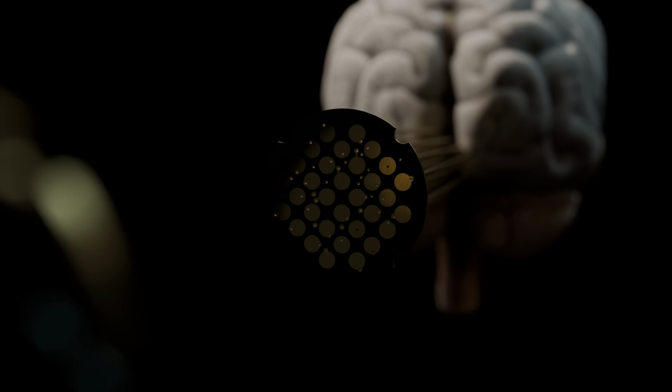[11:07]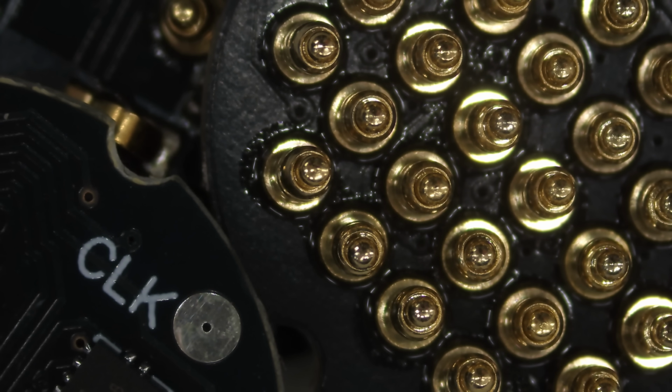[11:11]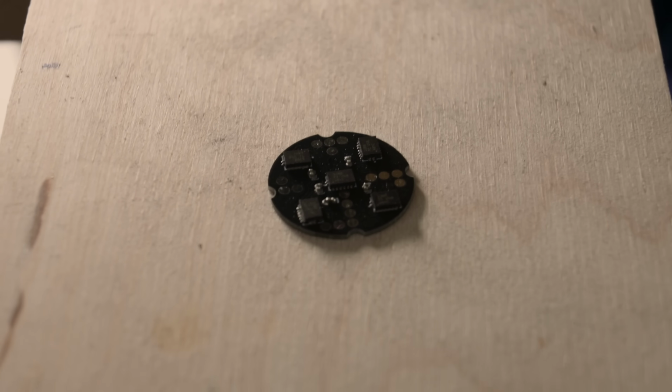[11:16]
For this version, I set the neural matrix size to have 32 electrodes. This number was relatively arbitrary and could be anything. We assume everything on the brain side is taken care of already, and all of the electrodes are connected to a base plate PCB. Now on the MindLink side, we have a new layer. This will have spring pogo pins to match the pads on the brain baseplate. Of course, at this point, it is probably clear that the ATmega32U2 microcontroller would not have enough pins to properly accept all 32 of these inputs.
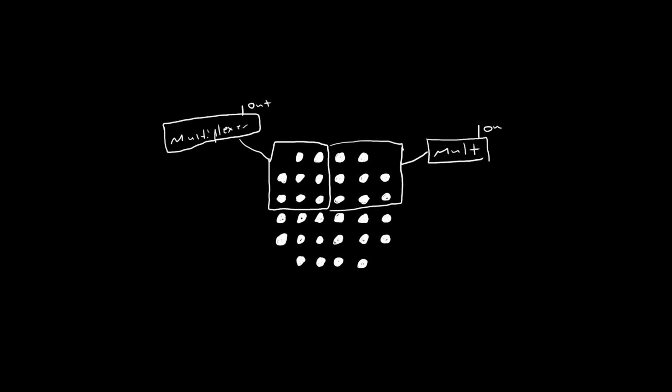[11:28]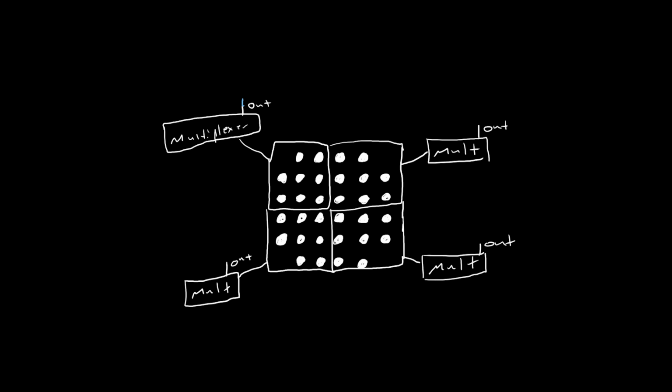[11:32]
To do this, 4 multiplexers will be placed on the other side of the same PCB, each selecting between 8 of the neuron matrix's pins. There's now not much space remaining on this layer, so to continue we should add another and expose the required pins. Another multiplexer will be used to select between the outputs of the first 4 multiplexers.
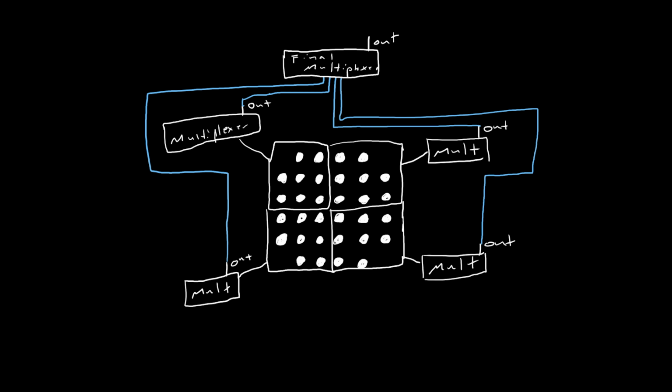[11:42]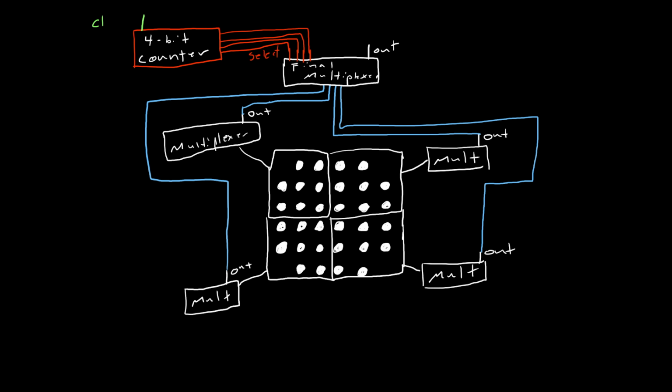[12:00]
At this point it would require 7 pins to address the individual pins in the matrix, and 1 pin for the output. Even this is too much for the microcontroller, although there does exist an easier method. Instead of addressing from the microcontroller, we will offload that duty to a counter IC. Each time we wish to see the output of a neural electrode, we send a pulse to increment the counter by 1, selecting the next pin with the multiplexers.
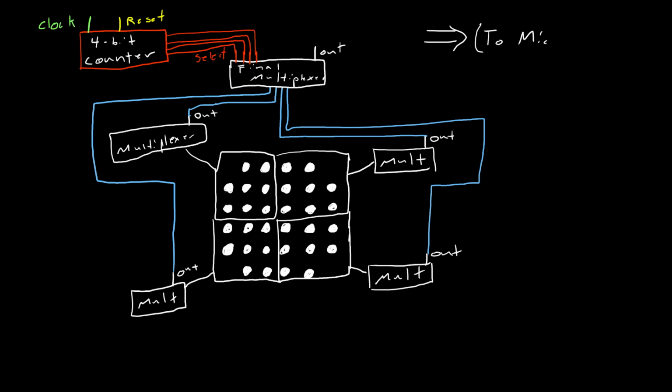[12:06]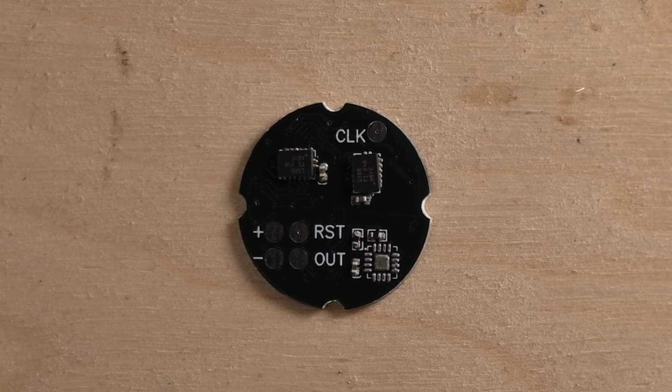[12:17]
It is now impossible to know which exact pin is selected, so another connection can be used to send a reset pulse to sync. Now there are a total of 3 connections to the microcontroller: the analog input, the counter incrementer, and the counter reset. It is also important to mention that on the second board, there is an op-amp to amplify the voltage to 5 volts from the incoming neuron, since they typically send pulses of only about 0.15 volts.
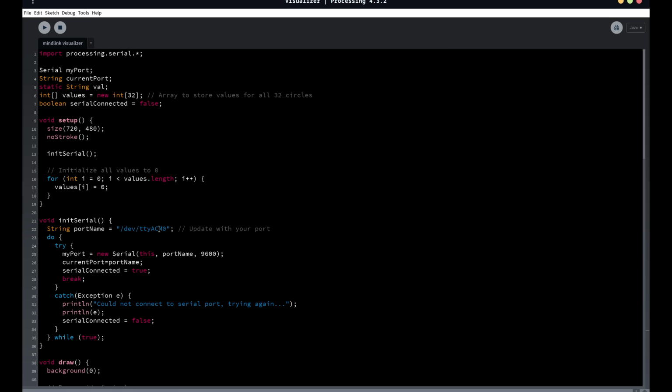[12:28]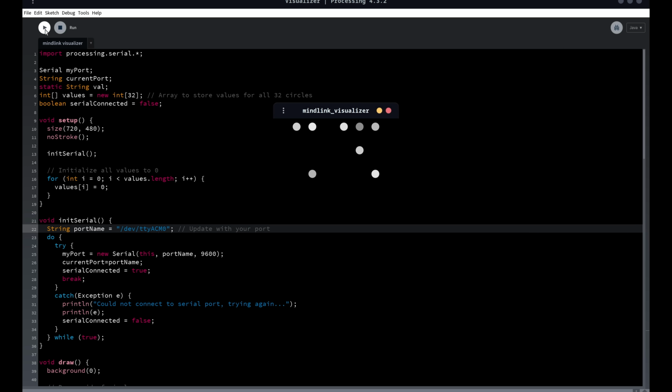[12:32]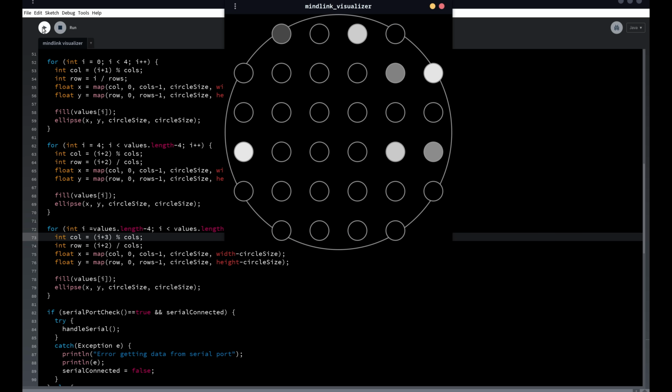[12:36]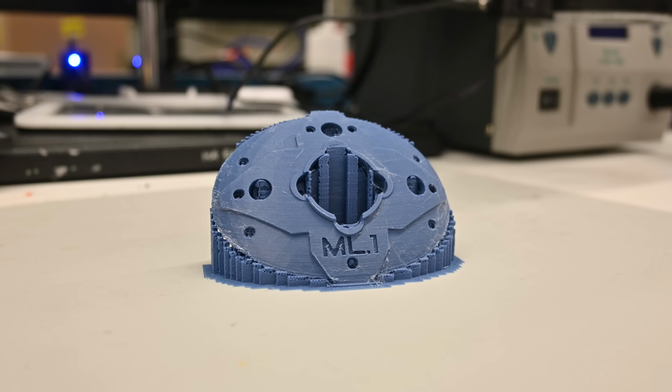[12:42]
Now each electrode can have its value read by the microcontroller and sent to any device. I use Processing to create this visualizer. In a full application, this data would also be processed with the machine learning model, so the activity could be understood and actually used. I then 3D printed this proof of concept cover and mounted the MindLink.
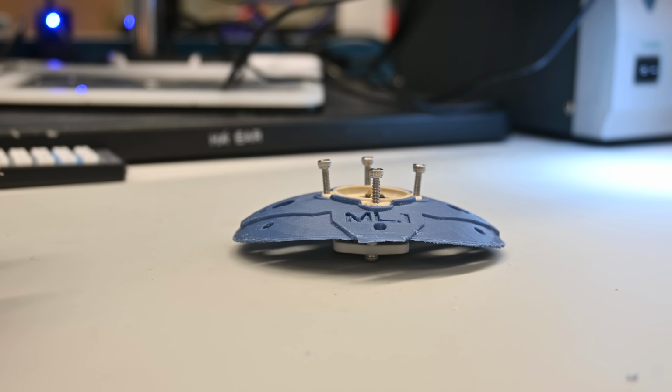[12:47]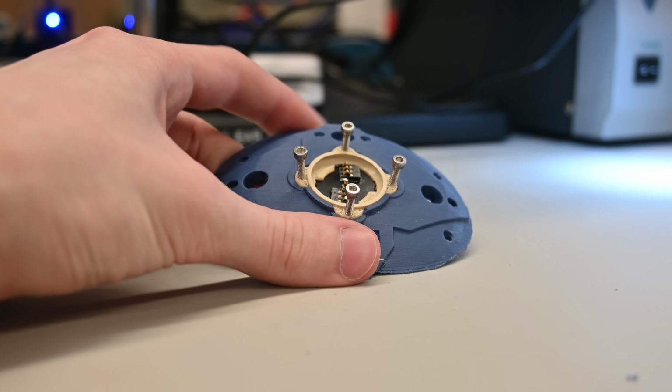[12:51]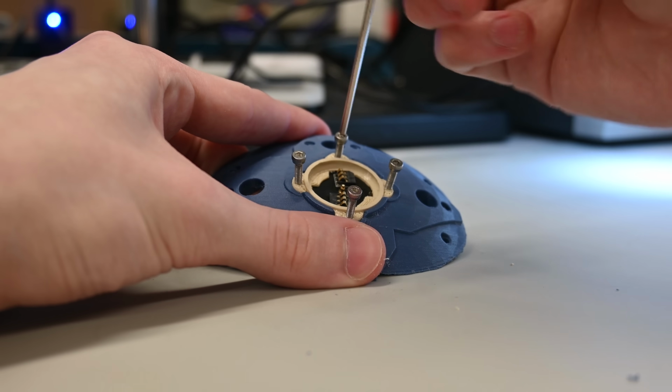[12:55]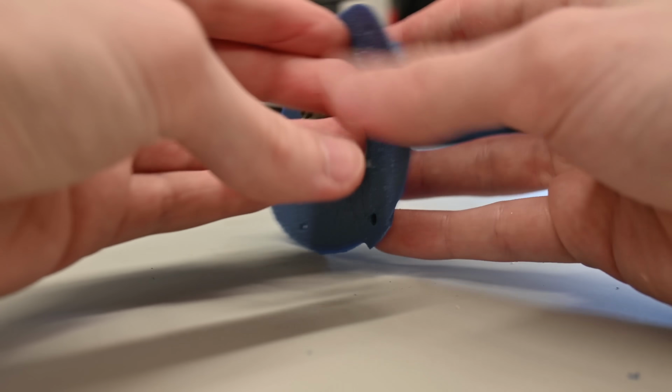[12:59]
As you can see, it conforms to the shape of the skull, and has many screw holes for mounting and holding peripherals. The MindLink is also completely flush with the surface, so there are no protruding pieces. And now, taking a look at the entire thing, it is constructed primarily out of plastic. This is wrong.
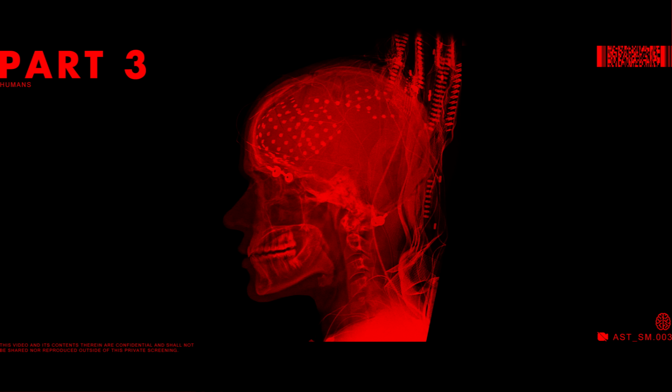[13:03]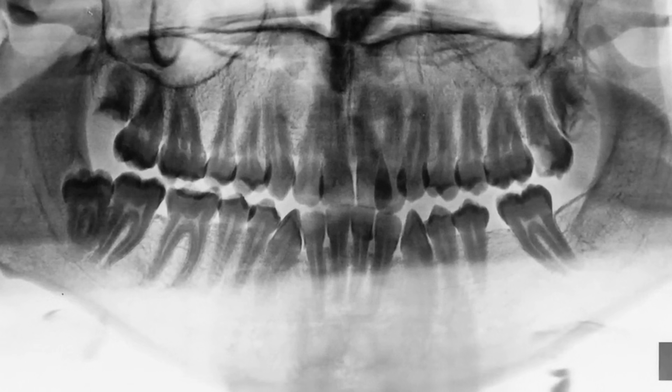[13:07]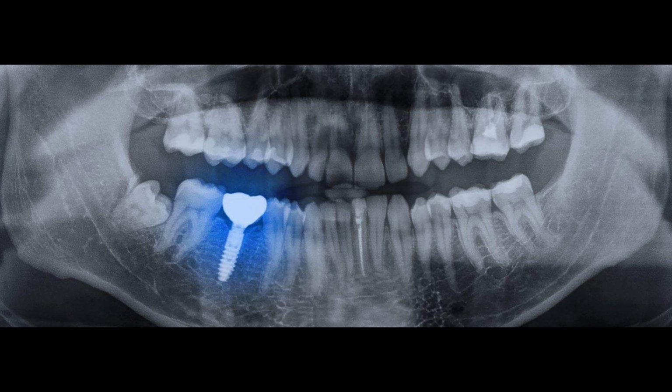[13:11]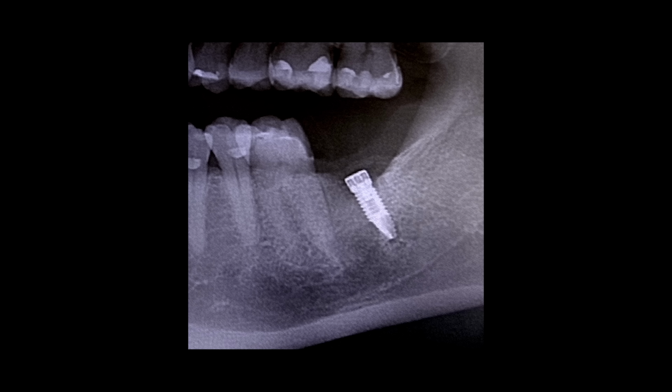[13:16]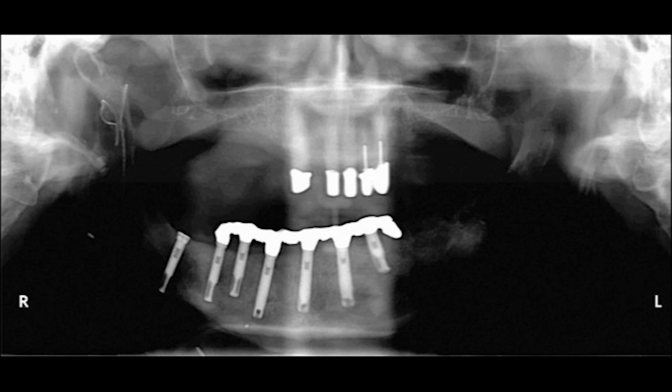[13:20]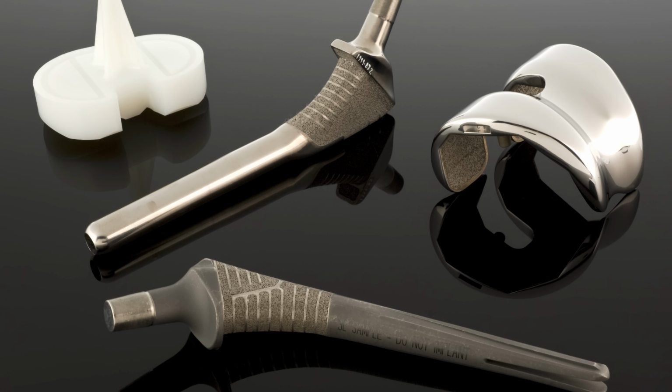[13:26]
Part 3. A tooth is pulled. A steel replacement is installed. The material begins to leach into the surrounding flesh and bone. The immune system responds to the medical implant by attacking it. Inflammation, irritation, eventual removal.
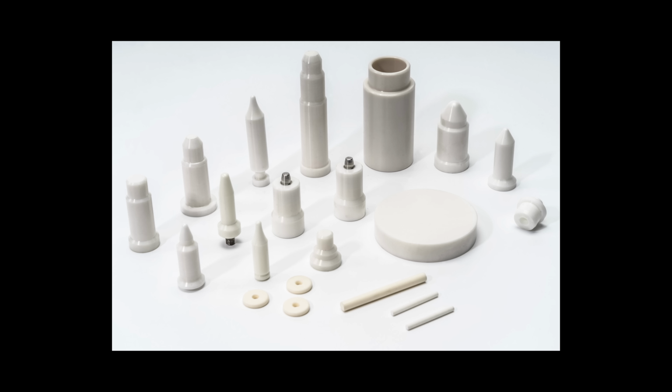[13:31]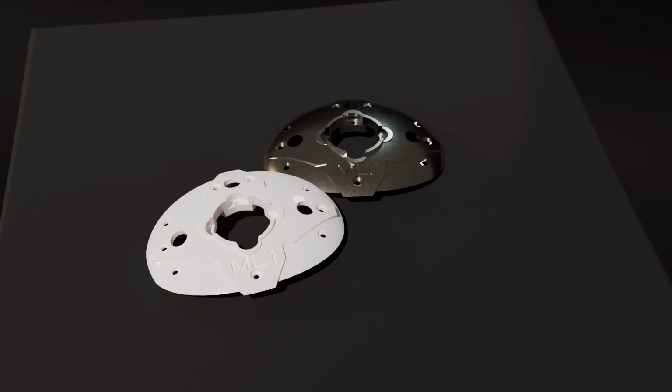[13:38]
Most materials humans know of are not biocompatible, though there are a few, such as titanium or zirconium oxide ceramic, which are almost completely inert in the human body, having no reactions with tissue and not being attacked by the immune system. Most likely titanium would be the best option for the MindLink.
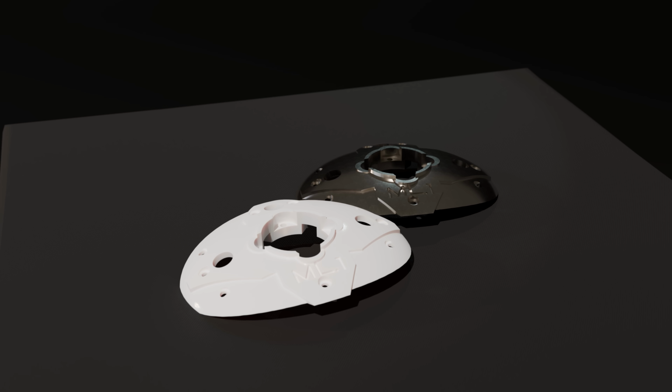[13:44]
Not only is it easier to manufacture, I can even have it 3D printed for only a few dollars, but it is also more ductile and less likely to shatter in the case of a large impact. Although I'm not trained medically, so it may be the case that I am wrong on each of those points. Otherwise, a ceramic would be much better because it would not block Bluetooth or Wi-Fi signals like titanium, and also be non-conductive, so extra shielding would not be necessary.
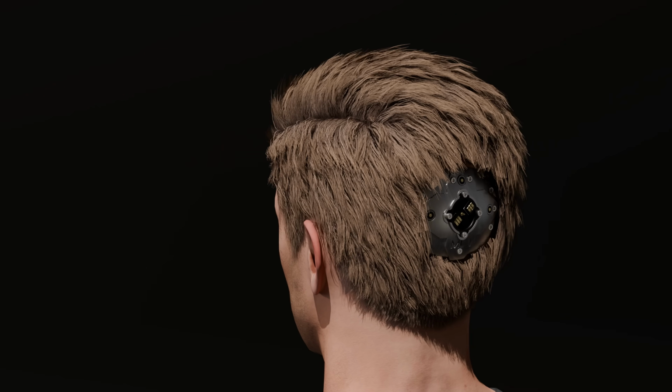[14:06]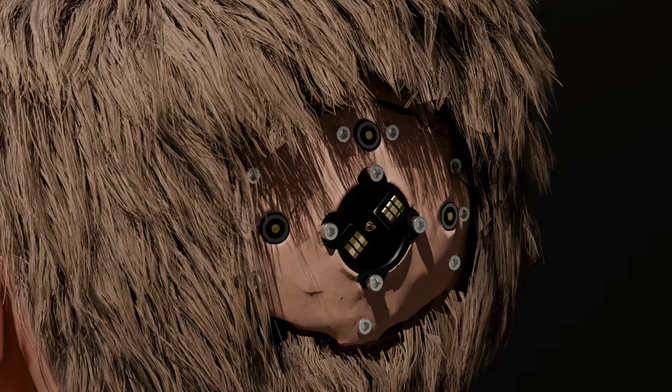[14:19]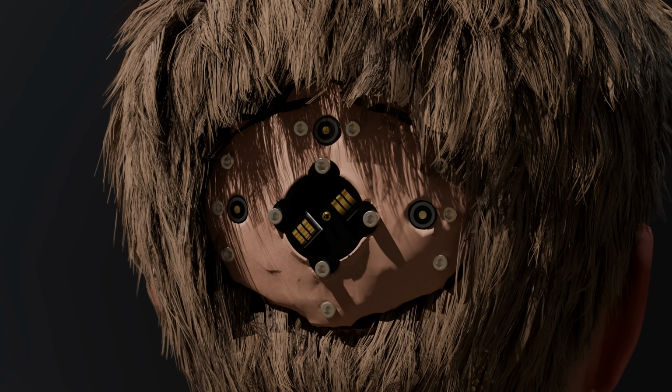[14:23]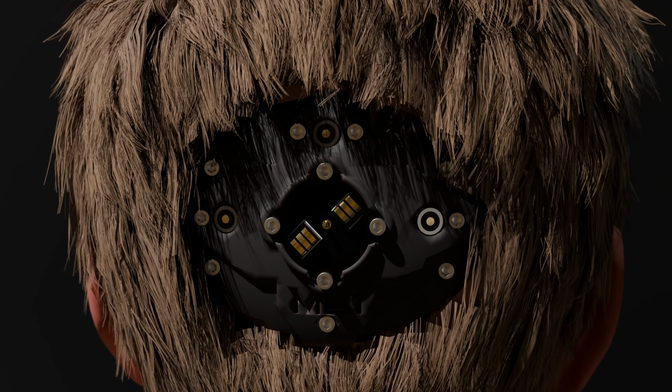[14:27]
Once the MindLink is implanted, it makes sense to just leave the entire thing exposed. This would allow for very easy access for maintenance or upgrades. But because it is a design that doesn't take up more space than the original skull did, it would technically be possible to have skin still over it, though you would still be limited to what haircut you have unless you choose to not plug it in often. So in the future, it would likely be more popular to have removable silicone or plastic covers.
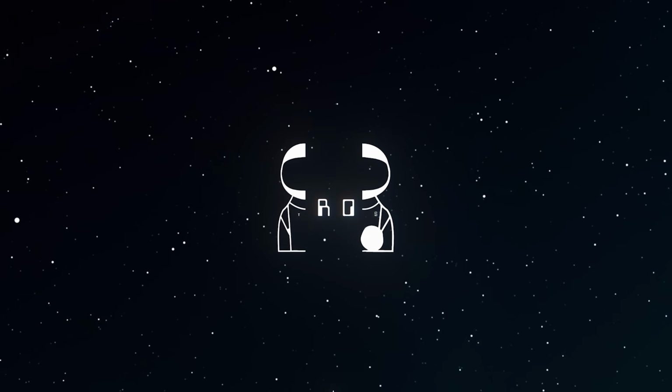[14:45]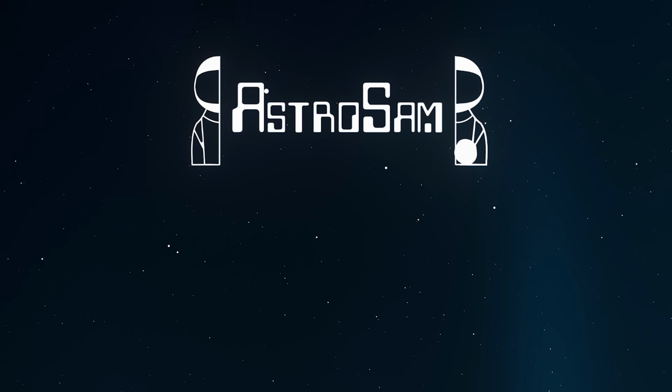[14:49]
The MindLink as it stands is no more than a proof of concept. There is a long road ahead to take it from a stack of PCBs and 3D printed parts to a fully realized and truly seamless brain-computer interface. But I believe that we should go there together, that the future brain-computer interfaces should be accessible to everyone through open source and as customizable as possible.
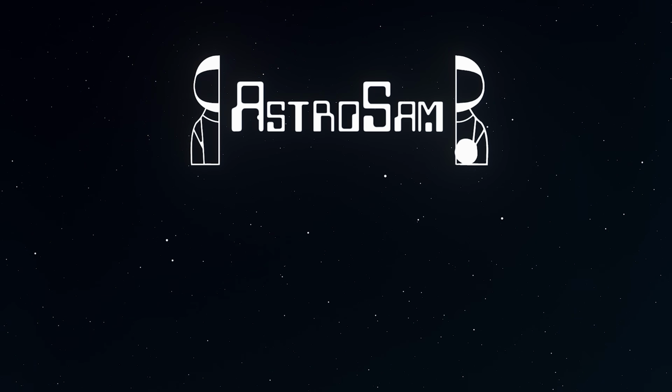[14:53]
Even if what is eventually adopted is completely different from this, I hope it stands as a basis for future work. Thank you for watching.